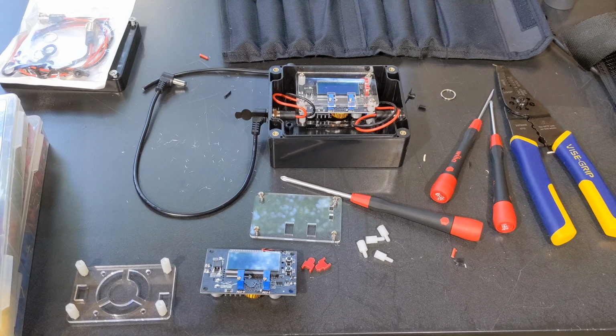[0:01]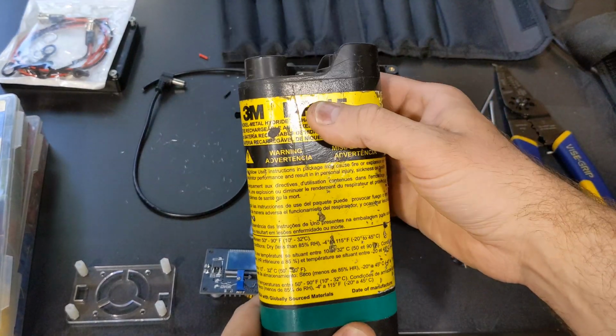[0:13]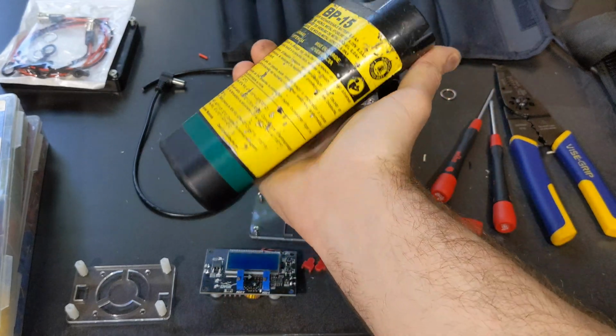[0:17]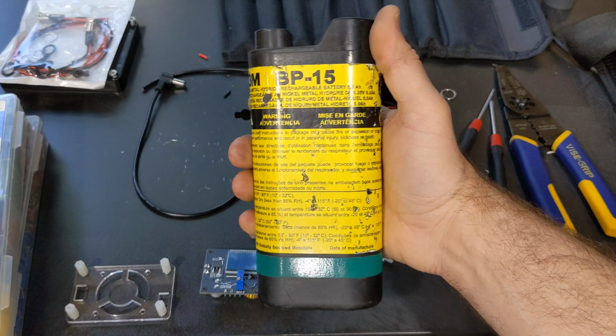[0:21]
Hey guys, wanted to do a video just going over how to convert the 3M Breathe Easy Turbo to using a normal battery instead of the BP15. So if you're familiar with it, this is the normal battery it comes with, the BP15, which is a nickel metal hydride. You know, it's pretty big and they're really expensive.
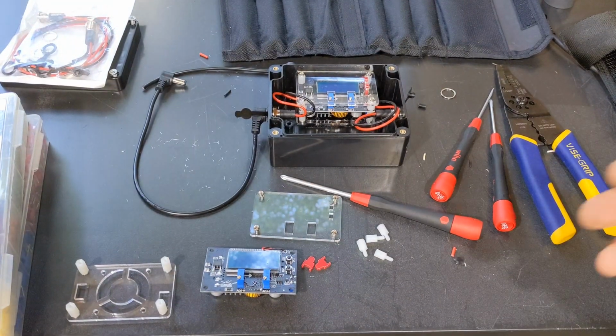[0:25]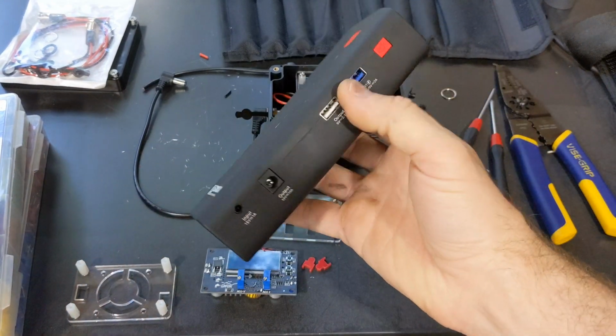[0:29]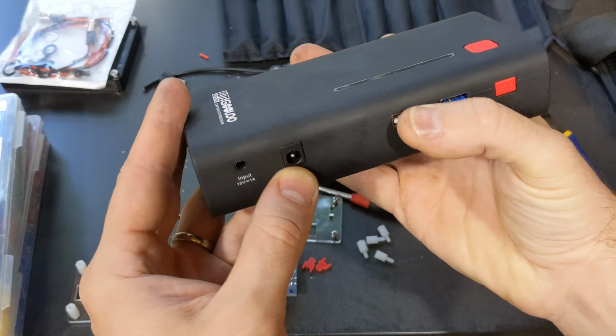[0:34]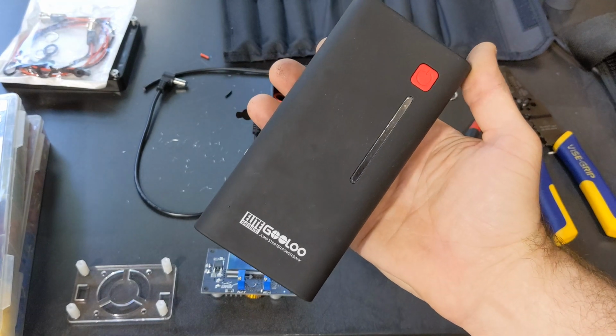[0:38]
They're like $200 or $300 for it. So what this conversion will let you do is switch it over to any battery pack, and this is probably on the larger side, but you can get all different sizes of these as long as it has a 12 volt pin output. So we're going to be going over that here, so let's get started.
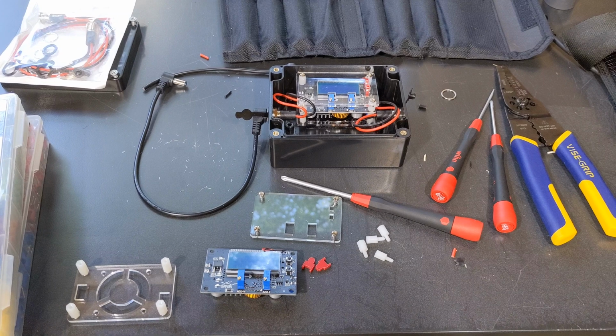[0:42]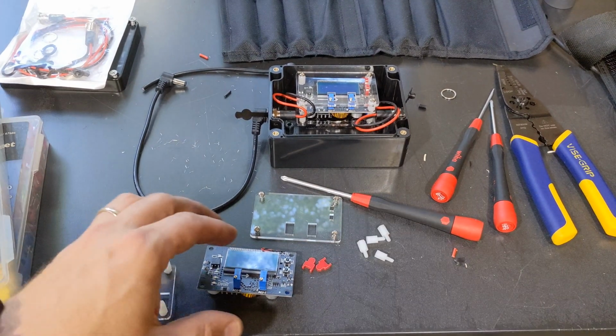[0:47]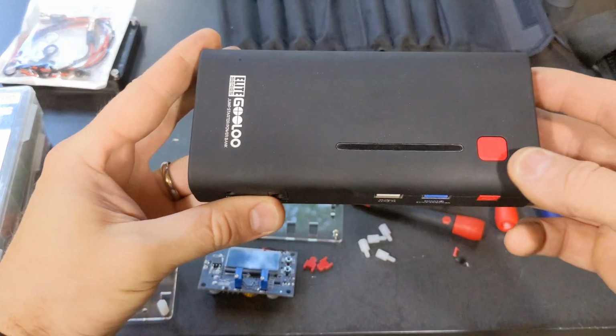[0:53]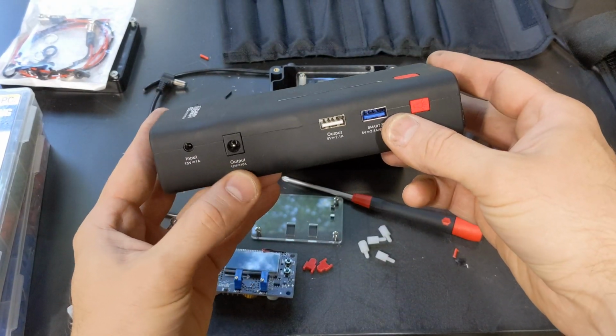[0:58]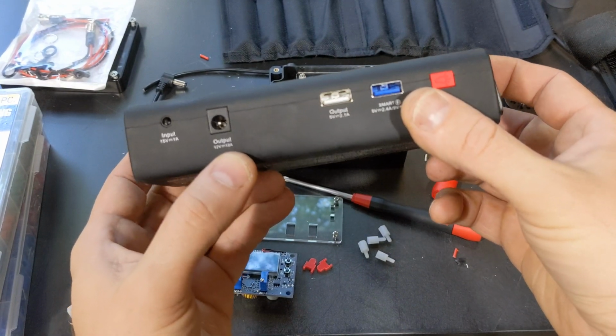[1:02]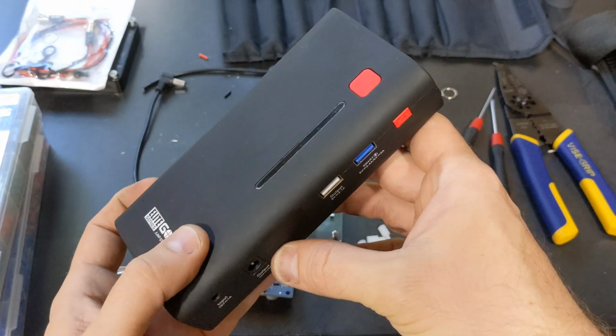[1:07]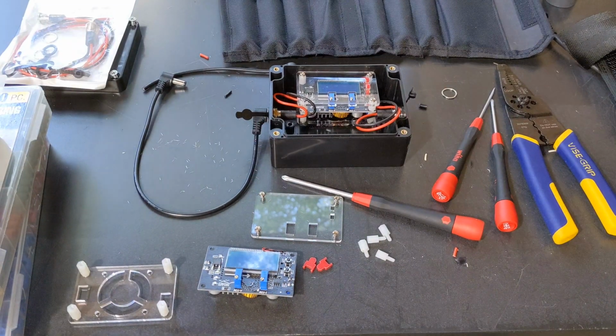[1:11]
All right, so basically what I wanted to go over first of all is, like I was saying, we're going to need to have a battery bank or battery pack that has a 12 volt output. The 1 amp is fine, but I think this will go up to 10 amps, but you're only going to need one. And basically what we got to do is we got to run the power out of this, and we have to run it to the
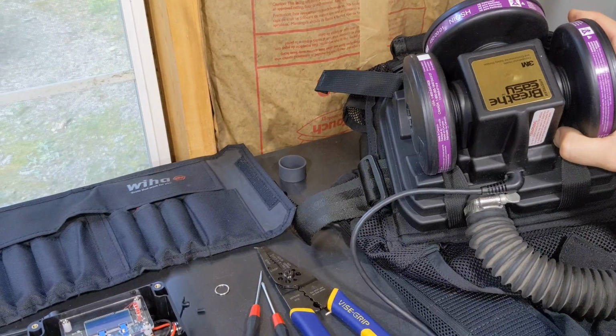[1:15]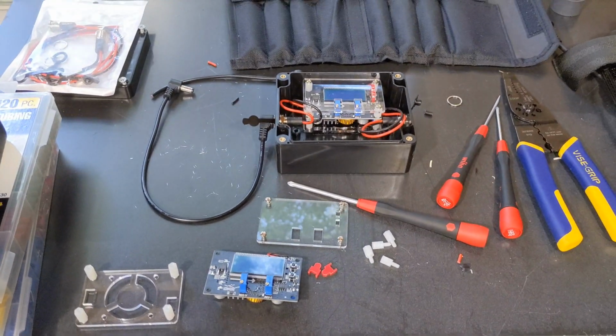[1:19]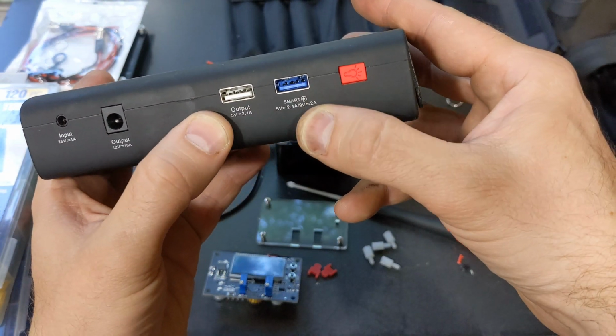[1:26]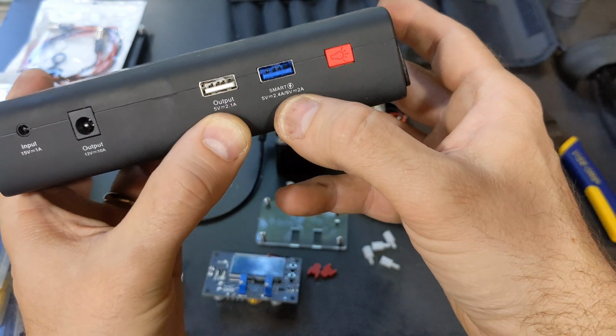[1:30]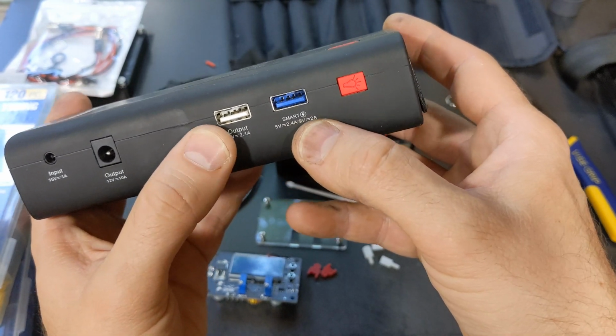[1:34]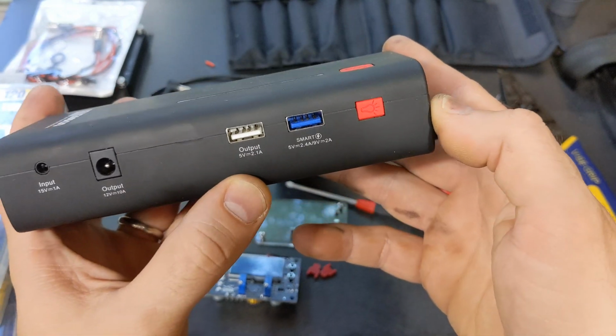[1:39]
Breathe Easy. But what happens is the regular BP15 battery is run at 6.25 volts. So a lot of people use the USB output, which is 5 volts, or some, you can even maybe find some that could do 9, although it's pretty difficult. But what will happen is that will either run under power or over power, and that could prematurely burn out the motor if you're running it over what the factory spec is.
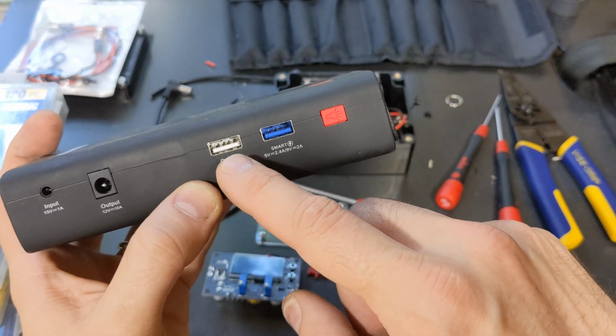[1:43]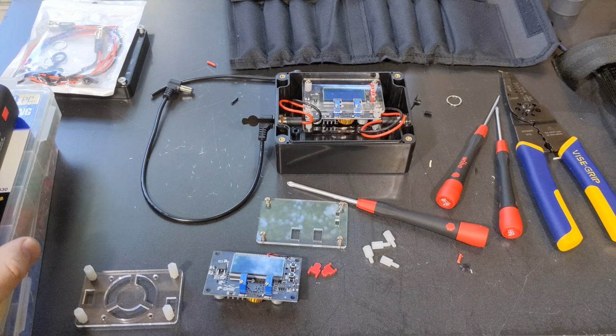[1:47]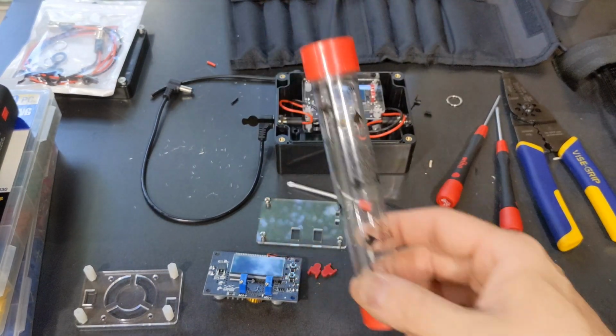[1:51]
And I didn't want to run it under power. You can, it'll still work. It'll put out over 6 CFMs of air. I've got a tester here. So what we're going to do is go over how to set it up at exactly 6.25 volts output, so you get the exact same amount of air CFM output that the factory battery gives you.
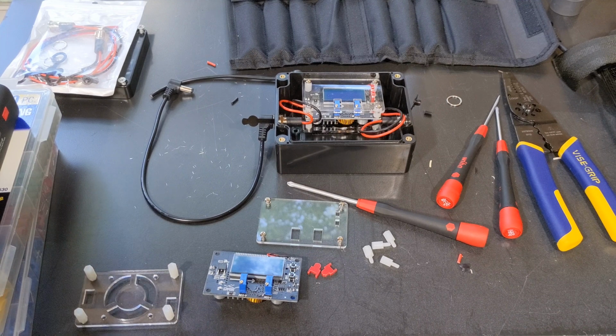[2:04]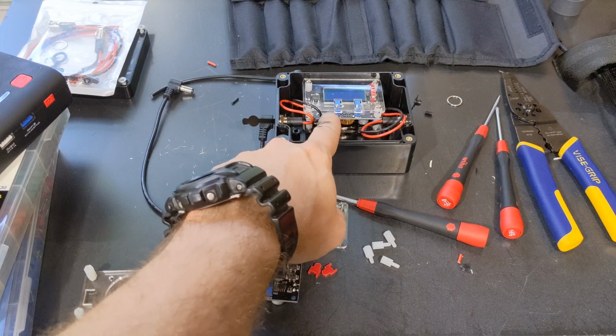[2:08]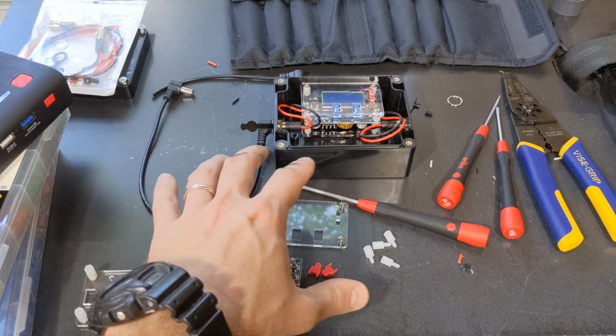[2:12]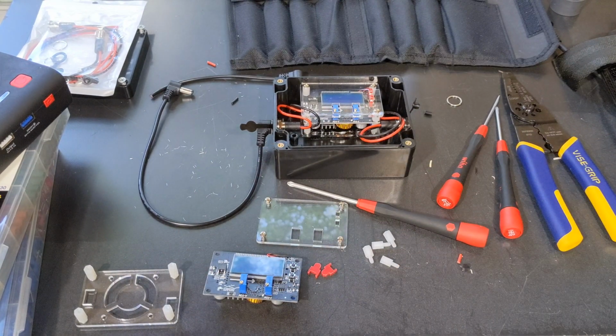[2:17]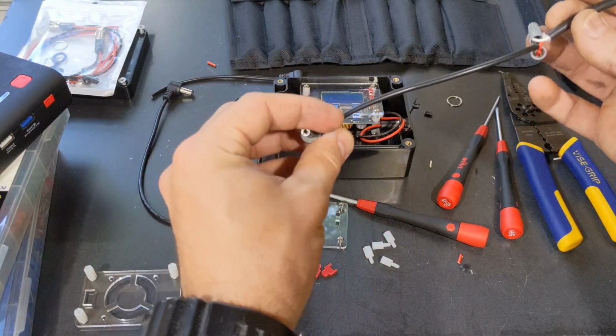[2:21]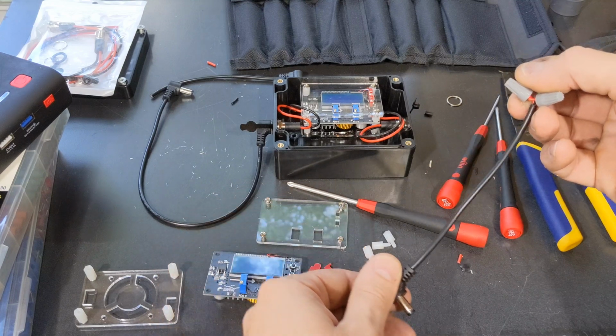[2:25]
So basically what we do is we run the power out of the battery pack. It goes through this thing, which is a buck converter, and I've got another one right here, so I'm going to show you how to set that up, and then it runs into your Breathe Easy. But what we have to do is actually a cable conversion. You'll see right here, I just snipped it and wired these in. I'm going to be going over how to do that. I'm going to get rid of these wire nuts and actually solder it.
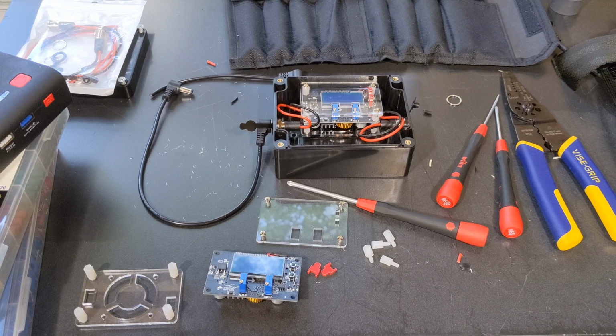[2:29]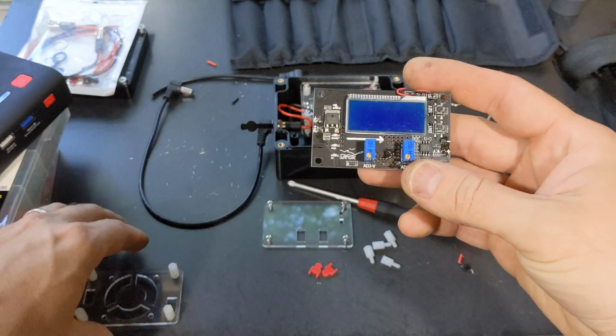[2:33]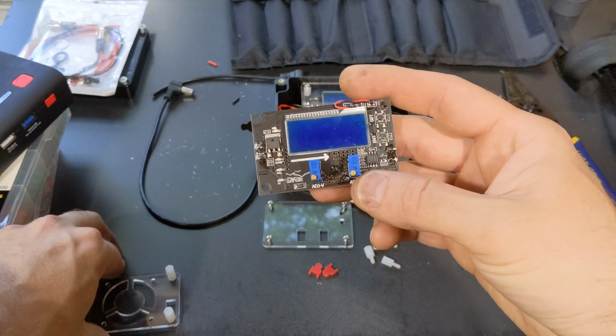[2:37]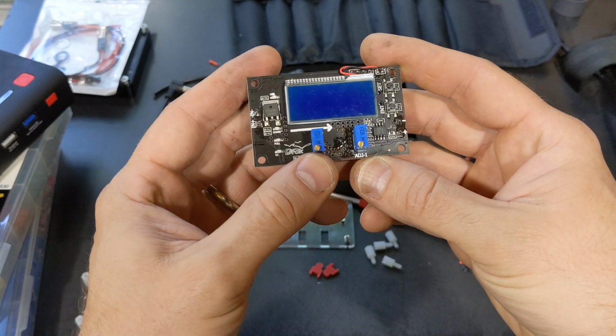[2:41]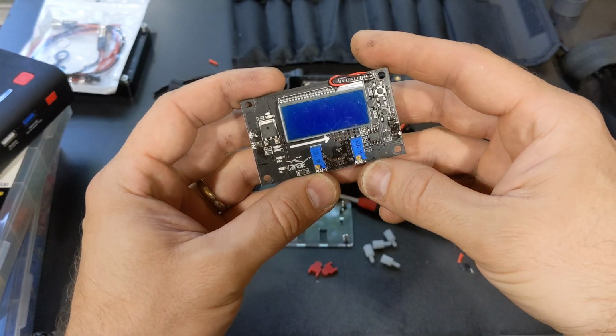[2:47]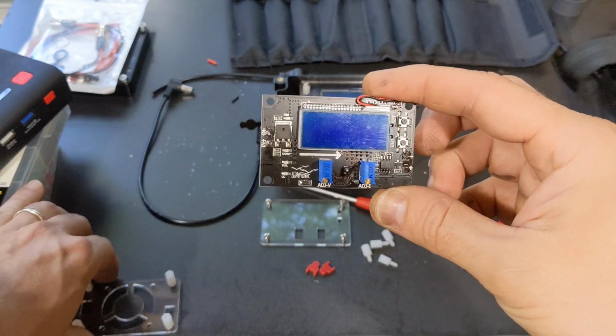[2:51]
So here we go. Basically, I ordered this from Amazon. It was about 15 bucks, a buck converter. And you can custom set the output on both voltage and the amps. So this little flathead screw right here on the left side will adjust the volts, and the one on the right will adjust the amps output. So I'll show you how to do that. This one I actually fried because I set it up wrong. So make sure you don't do that.
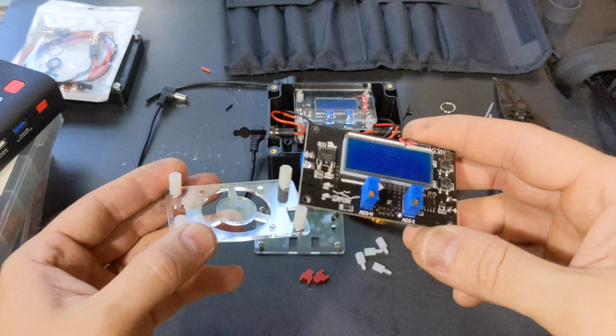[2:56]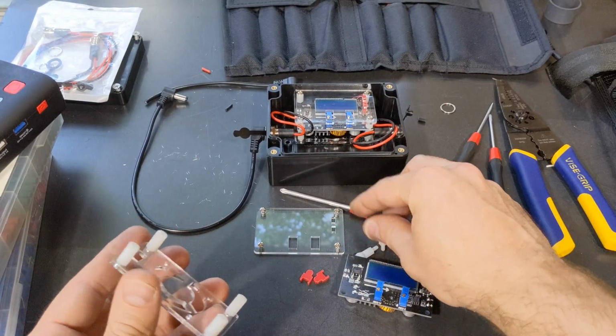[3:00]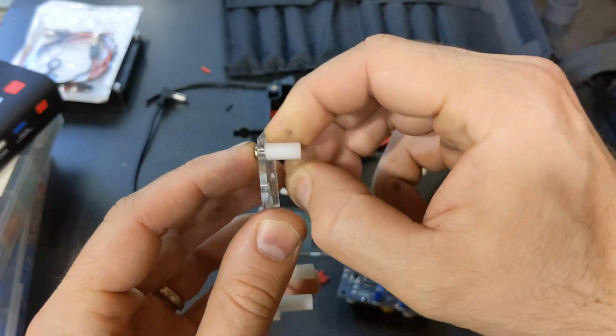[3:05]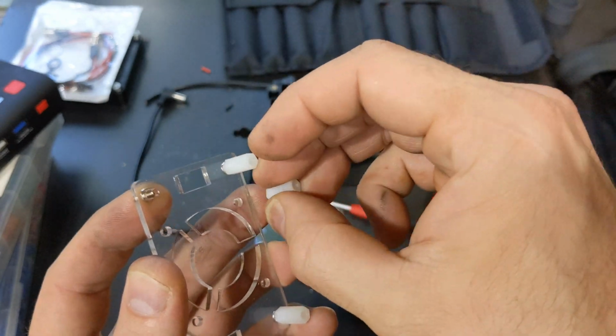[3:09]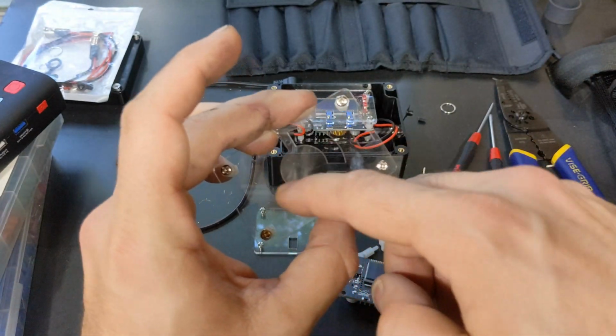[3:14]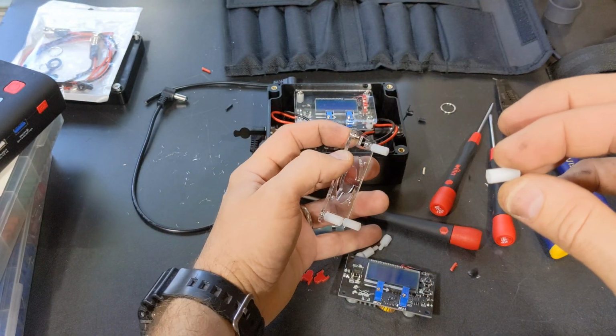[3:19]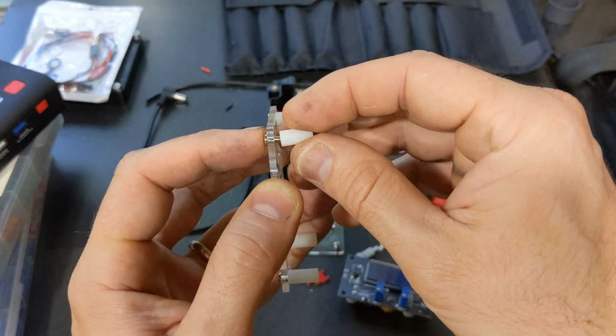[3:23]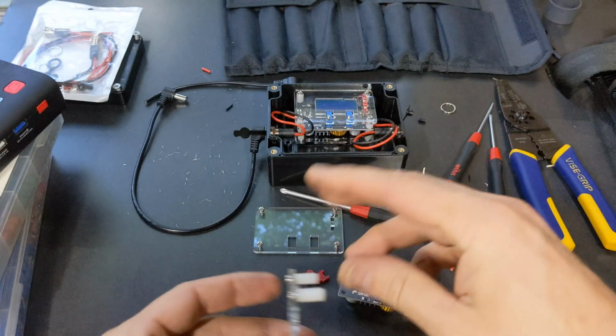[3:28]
But basically, it's going to come all disassembled in pieces. And what you'll do is, you'll see it's got these screws here on the back side, but it's all disassembled. But basically, you have a threaded portion on each end of this bushing, and you'll notice this kind of has a fan type cutout. So these are the longer out of the two. These other ones are shorter, and they have a male threaded portion coming out of there. So we'll just stick this on here, and to save time, I already got that assembled with those.
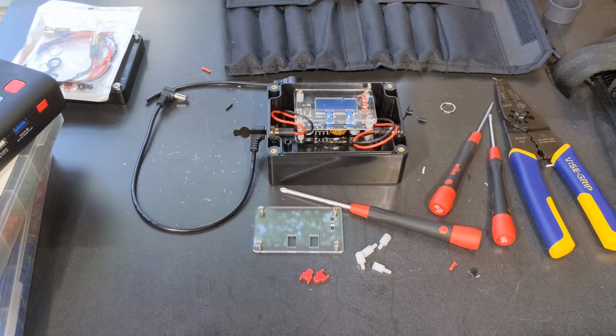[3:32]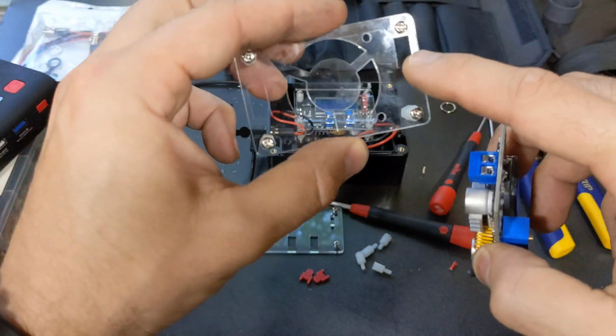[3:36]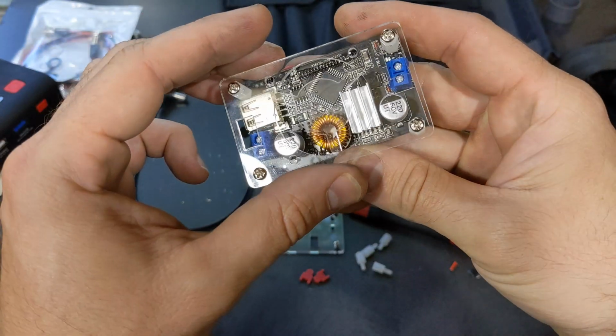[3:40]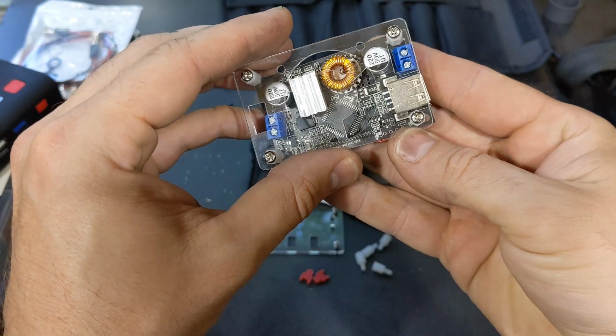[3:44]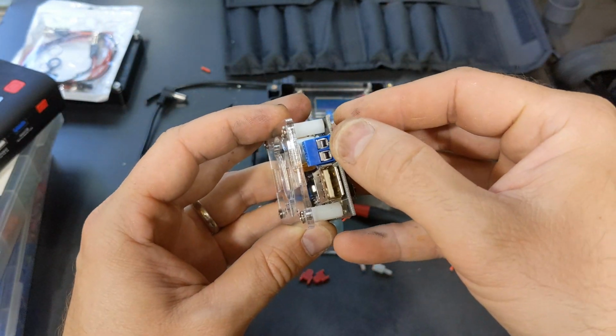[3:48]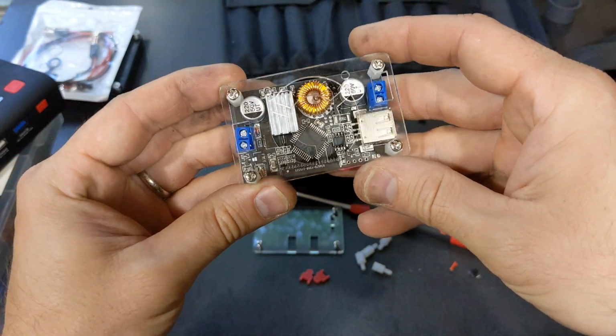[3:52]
Then what we do is you'll notice these rectangular cutouts right here and here. You just want to make sure that you line that up. So obviously that's not the right position. So we got to spin it around, because you want to be able to tighten these down. This is where your wires are going to go. You have your input and your output. So there you go. Got those lined up.
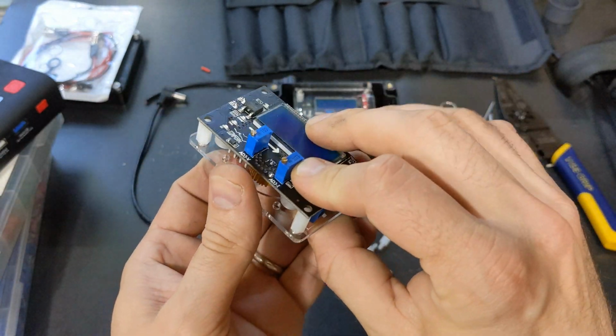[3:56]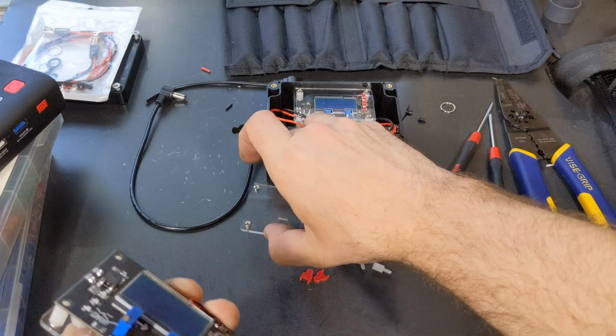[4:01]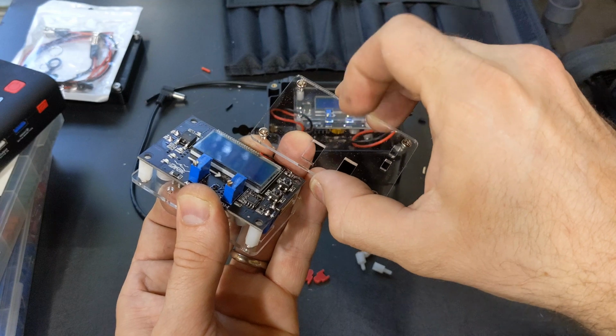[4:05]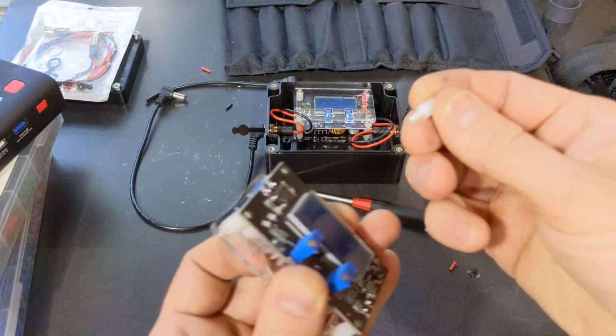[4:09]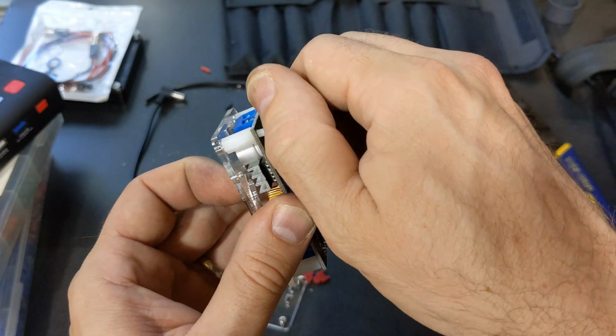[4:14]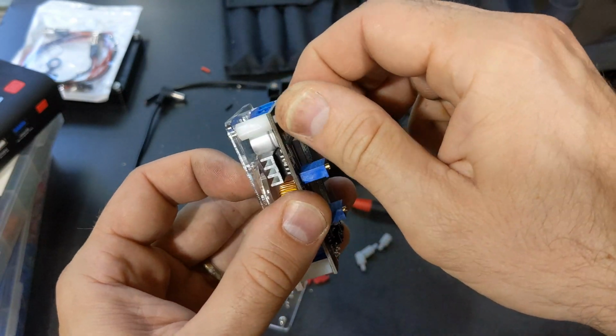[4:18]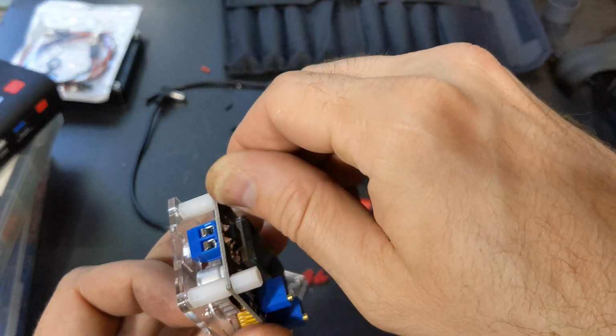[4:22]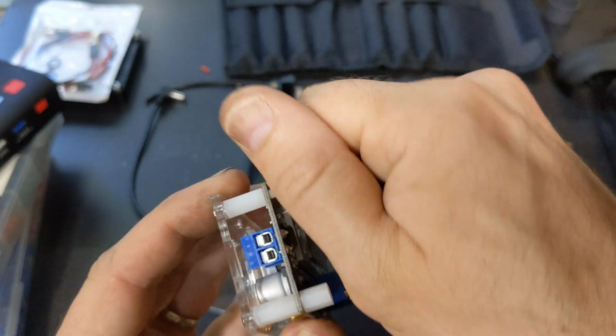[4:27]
Then what we'll do is we'll flip it over, hold it all together, and we will get our other plate. Now these came with a paper that you had to peel off to get to the actual plastic. We have to take these other bushings with the threaded rod, and we'll go through the circuit board. There's already holes there for it, and you just thread it into the other standoff there. All right, let's see.
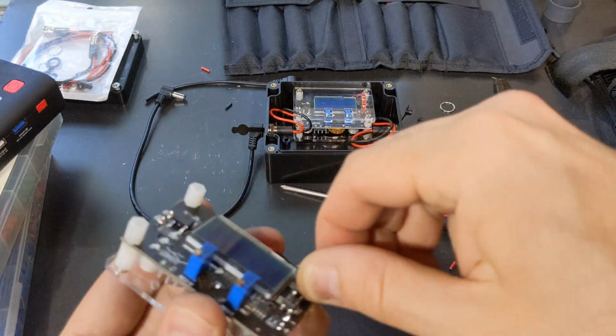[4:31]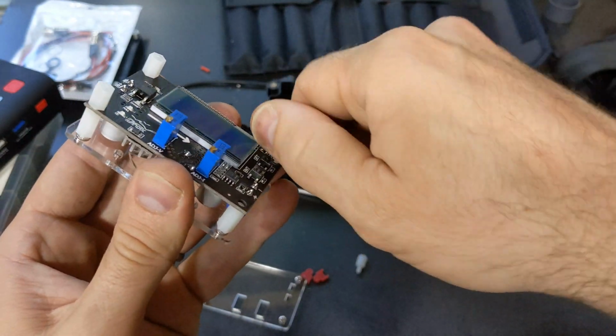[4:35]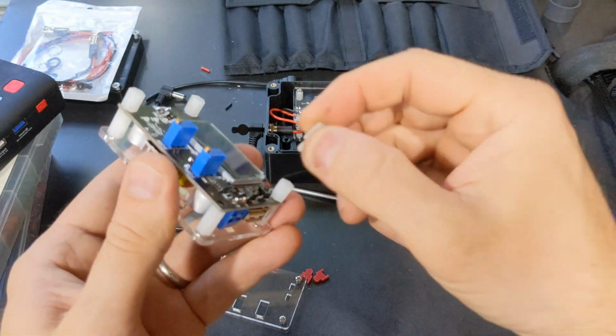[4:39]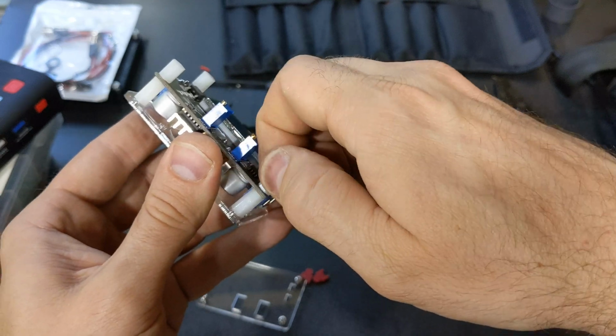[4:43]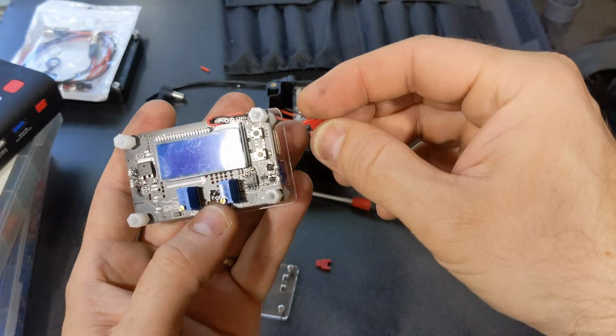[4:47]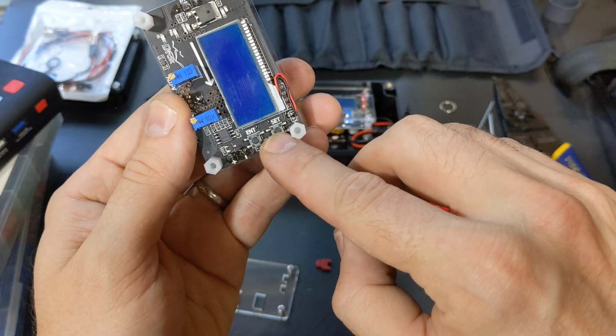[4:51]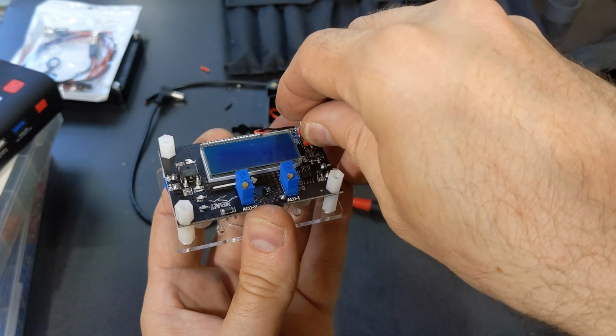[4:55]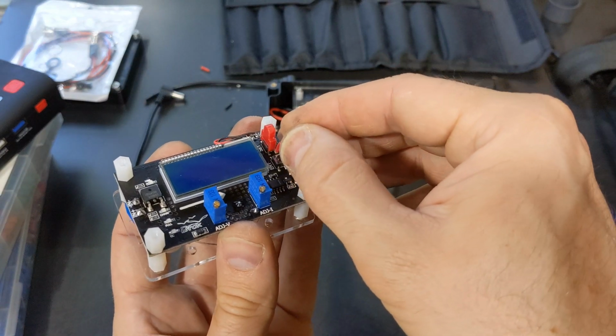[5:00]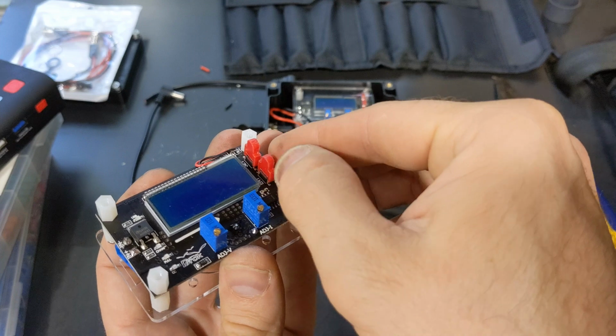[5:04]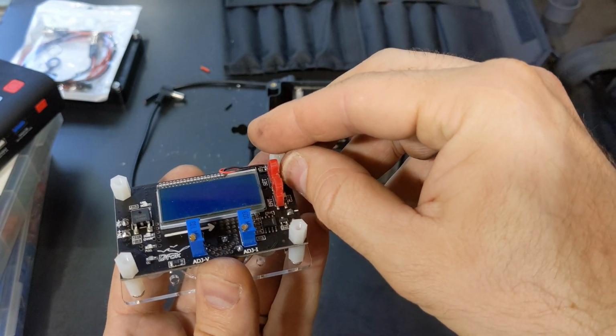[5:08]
All right, and then you also notice you have these two red things right here. And what that does is that goes on right here. You have your enter and your set button. And so we just kind of rest these on top. And this might be kind of hard for me to do on camera, so I'm just going to show you what you got to do. But you basically just rest these right on top of there, and you just try to make them line up as straight as you can. You can kind of see that.
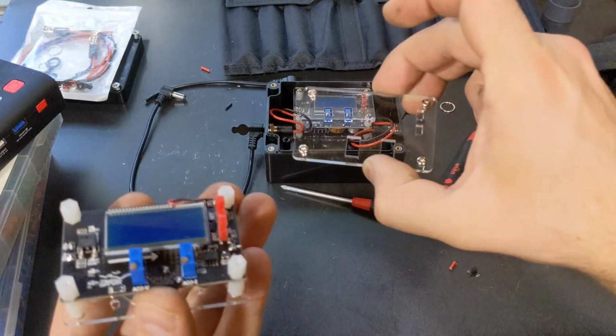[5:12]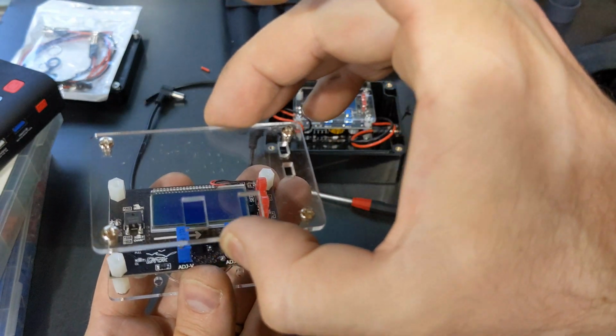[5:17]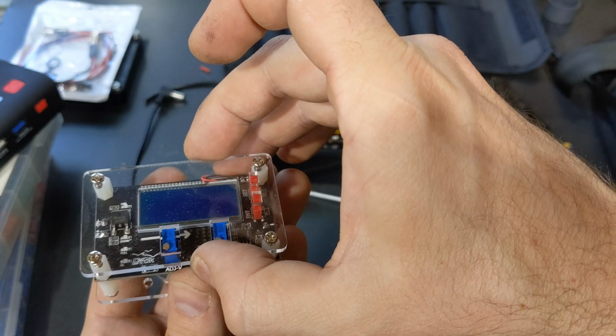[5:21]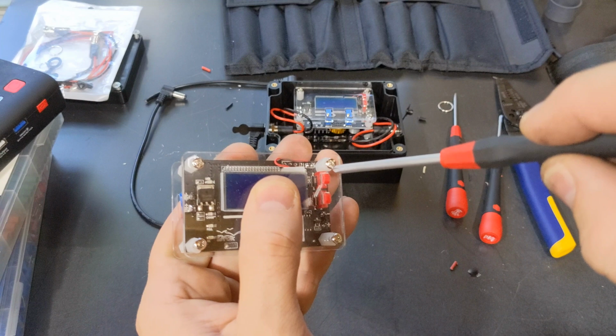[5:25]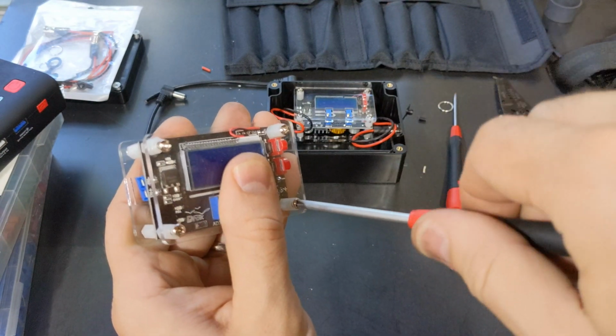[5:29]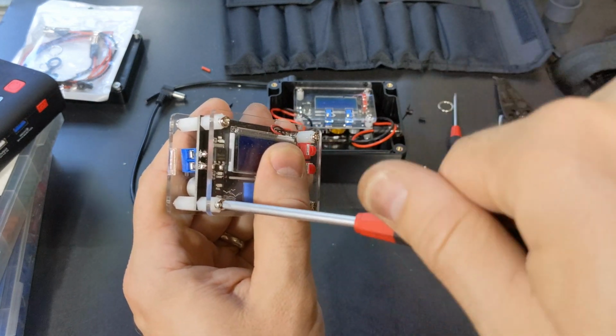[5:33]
Then you go ahead and stick your screws through that. And you see those two slots on the right side right there? That's where the red buttons have to go through. So we'll see if we can do it on camera. I doubt it, but... Ha! Got it. And then all you do is just tighten these down. And you've got it assembled. So that's how you get it assembled.
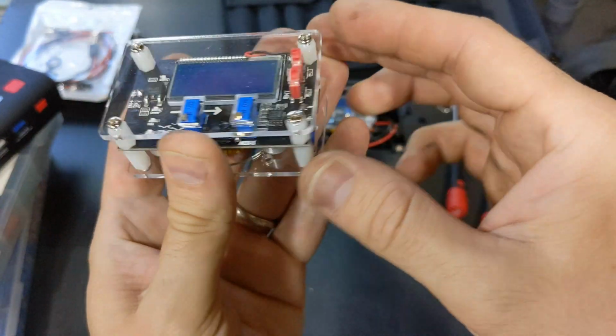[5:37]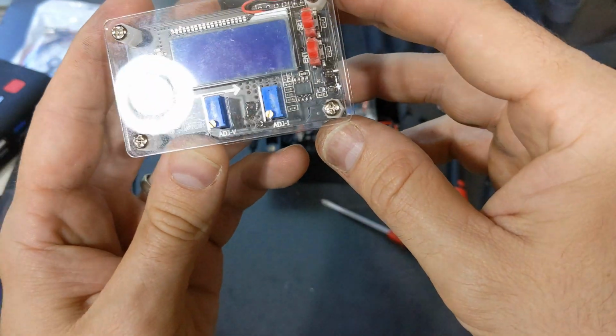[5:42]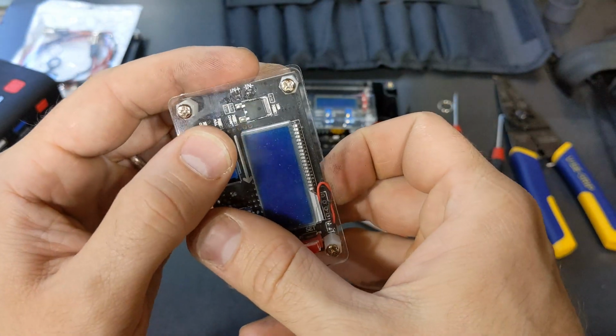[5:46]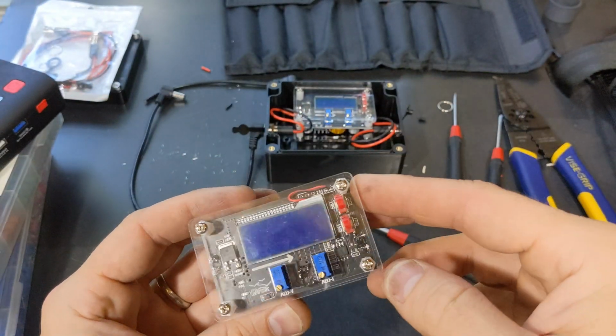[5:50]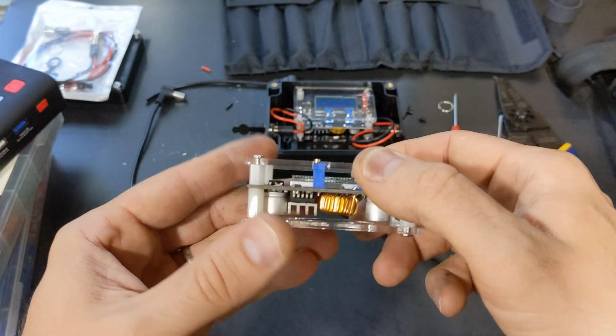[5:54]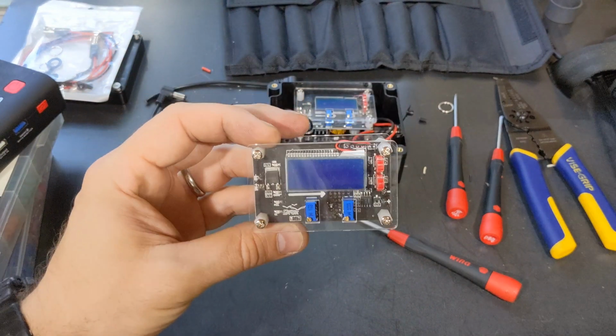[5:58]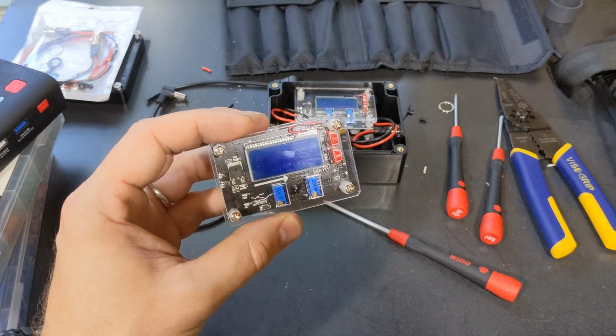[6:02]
Now, your output side is the side with the USB port on it. The other side will also say "in." So you know that's your in, and that's your output. And then that's just your digital screen right there. That screen does have a piece of plastic on it. You got to peel it off before you put this outer protective cover on. Anyway, that's how you do that. So I'll go on how to set it up here in the next segment.
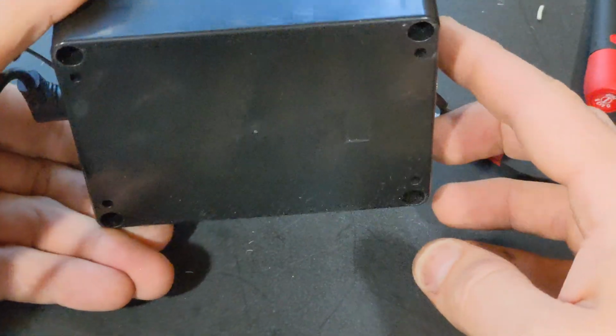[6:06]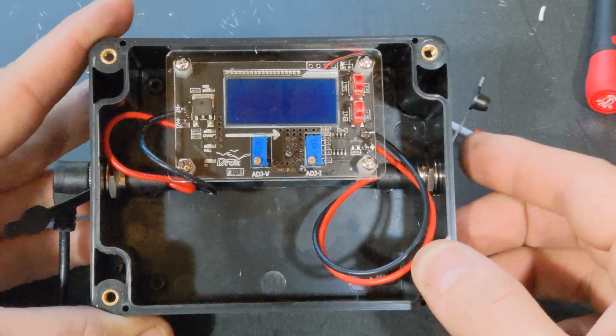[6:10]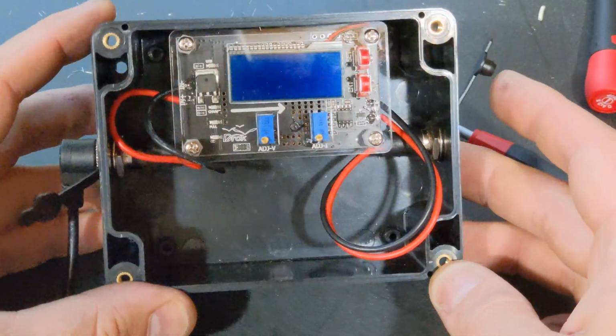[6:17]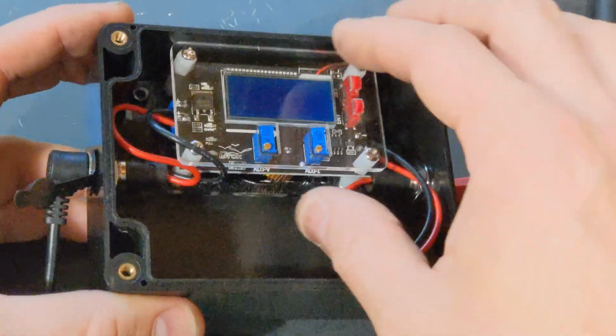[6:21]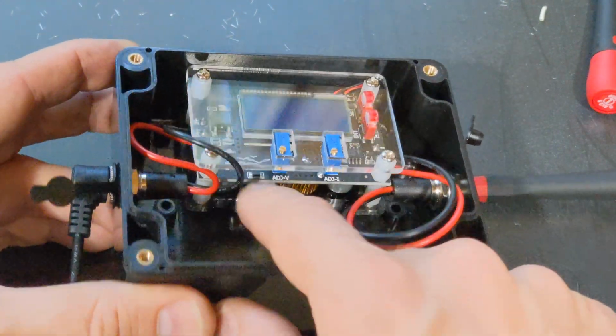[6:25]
Okay, so I also got this box here. This is a waterproof box. It's got a seal that goes all the way around it and everything. And then I've got these waterproof 12 volt pin connectors here. I'll put a link in the description where I got that from, but all the stuff's from Amazon. So if you have any questions, give me a buzz. Basically, I just stuck Velcro on the back of this and just stuck it in the box so it would be stable in here.
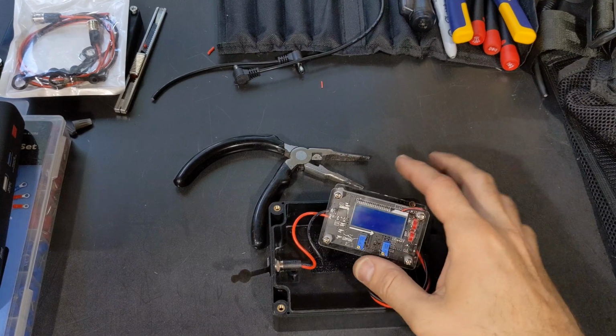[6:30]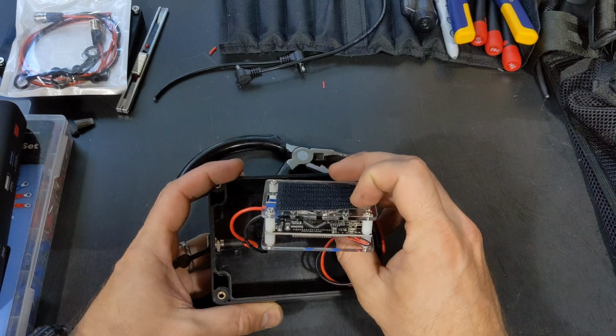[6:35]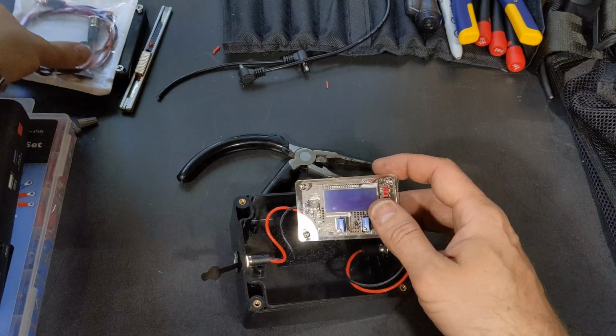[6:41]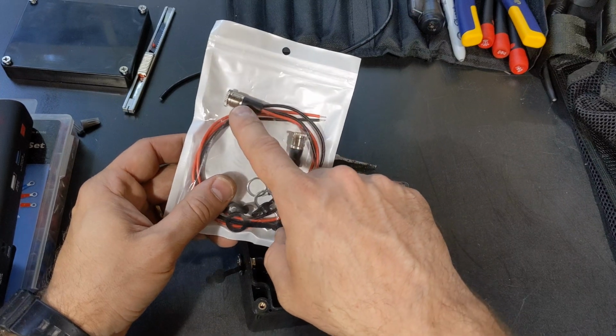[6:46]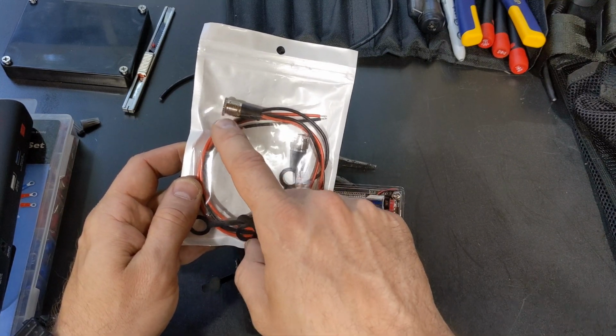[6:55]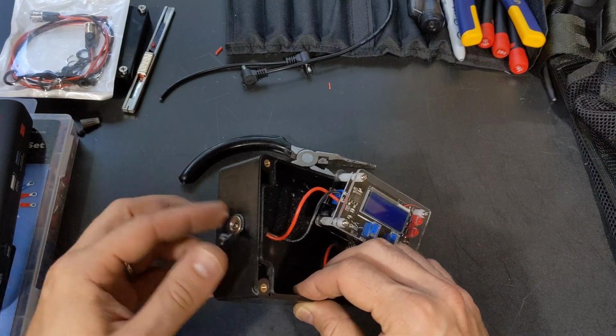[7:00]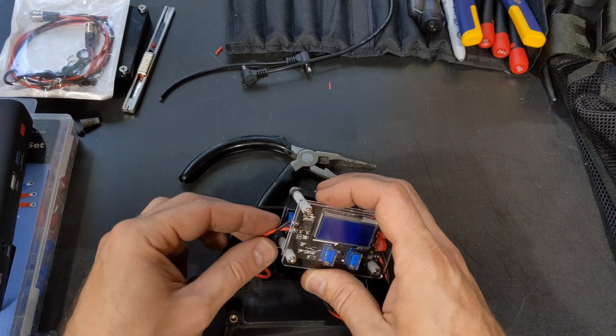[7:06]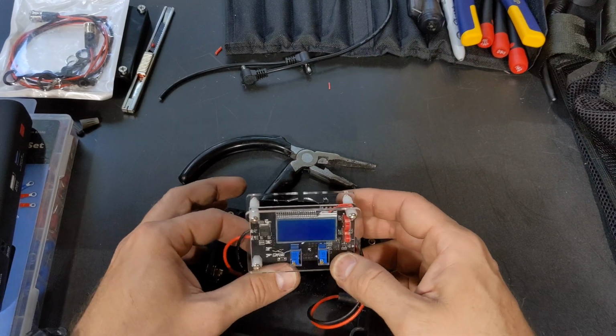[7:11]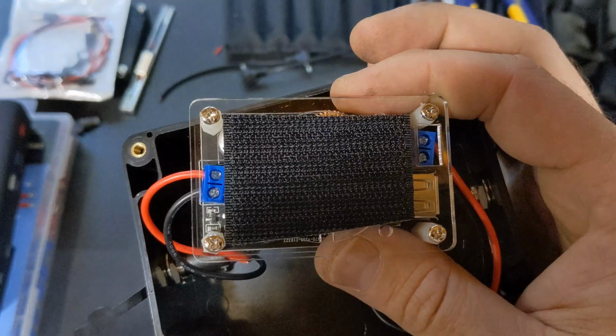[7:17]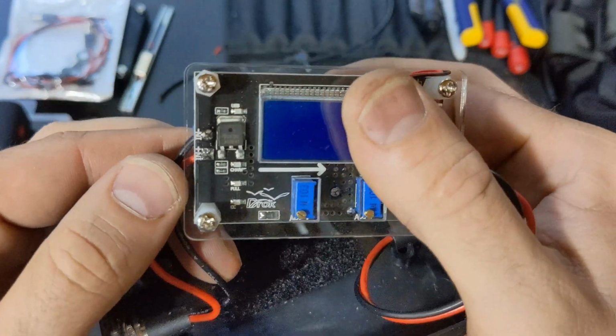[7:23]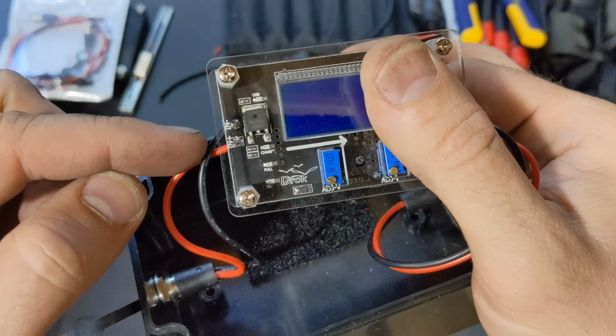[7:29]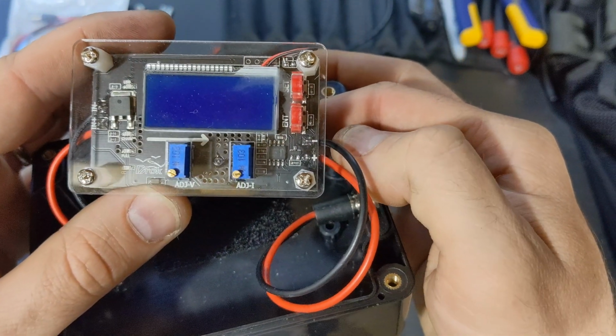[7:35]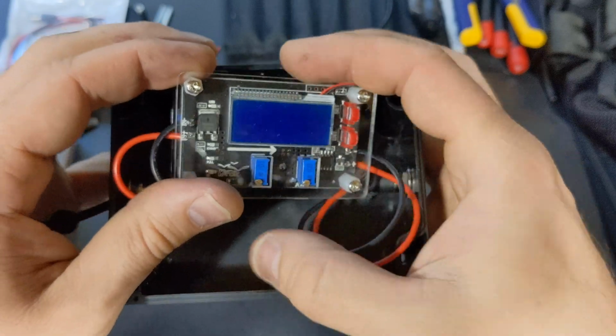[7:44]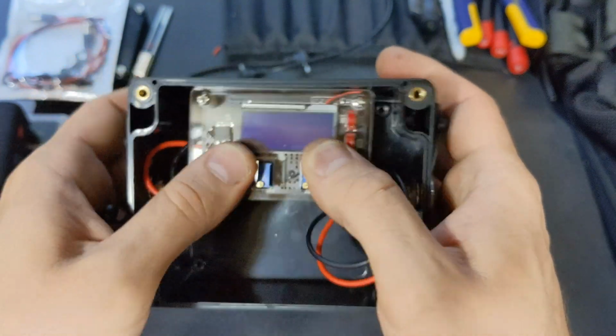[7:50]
Hold on a second, let me get a close-up shot here. All right, so basically, okay, the positive is the red wire going in, and the black wire going in is the negative from your pin connector. And then the same thing on the output: the positive is the red going out, and the negative is the black going out. So that's just how I have it set up there. So I'm going to go ahead and put it back in here. And then we will set up the programming here.
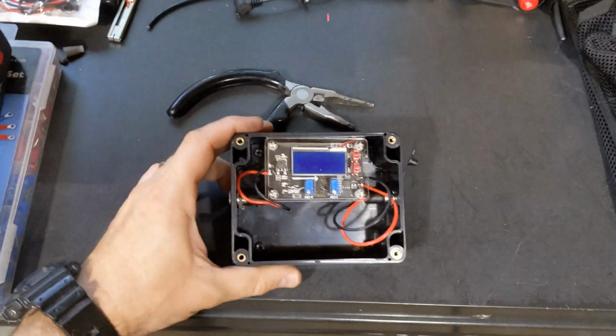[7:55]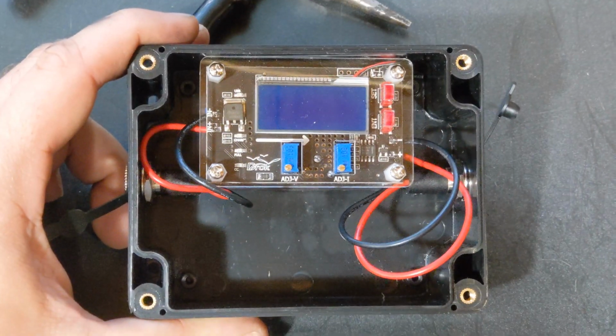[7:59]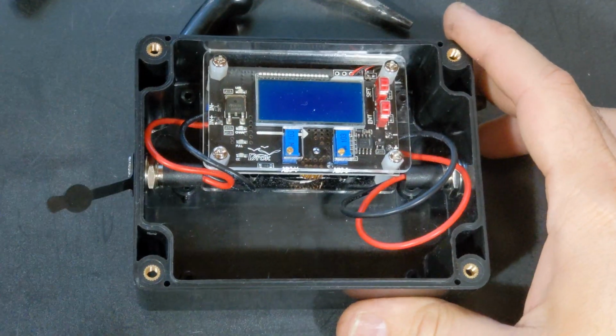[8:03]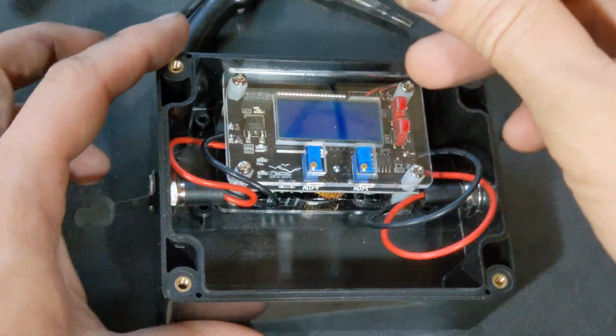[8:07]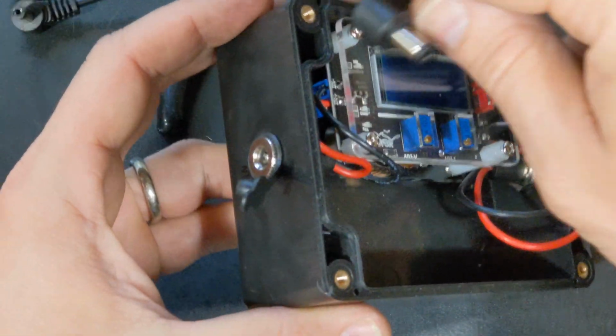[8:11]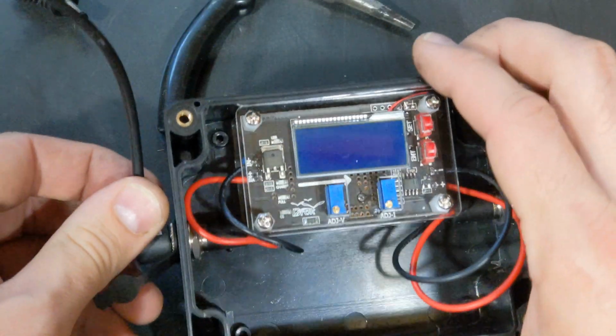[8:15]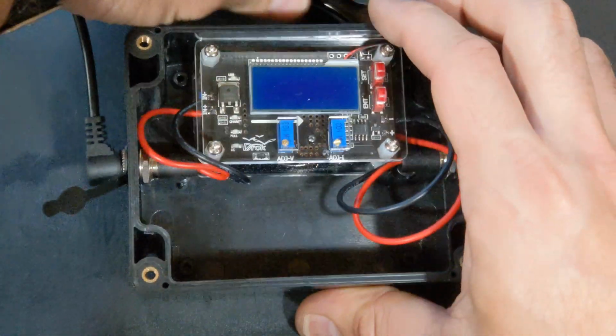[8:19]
All right, so let me zoom in here. Okay, now what you're going to do is just make sure you do not hook this up backwards. That's how I fried my first one. You want to make sure that it is coming from the battery going to the inside. And then, let's see here.
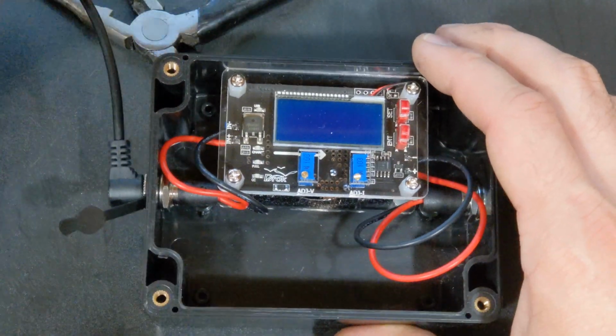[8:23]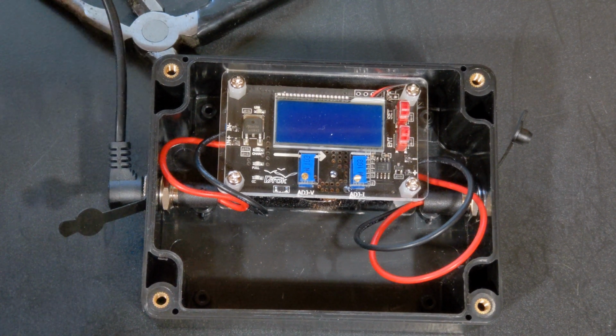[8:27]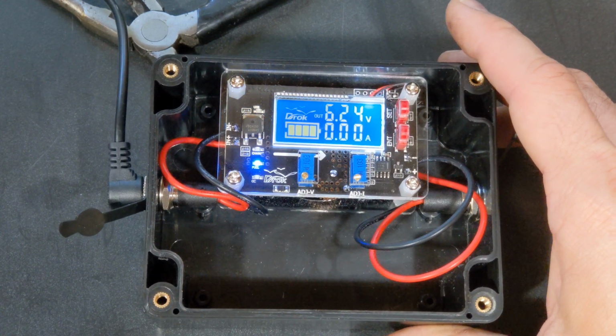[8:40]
And then you don't have to have the other side plugged in yet. All right, so we'll go ahead and just plug it in here to your battery bank. Then you can turn it on and it'll power up. Now you'll see I've already got it set to the 6.25 volts, but let me grab my
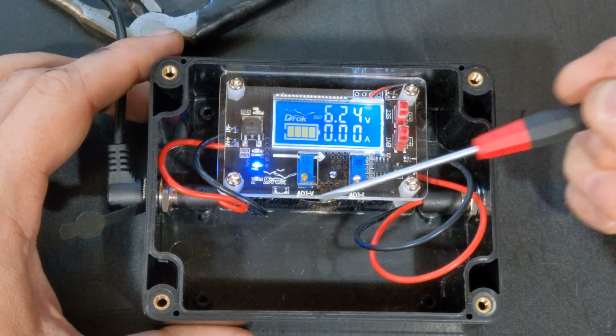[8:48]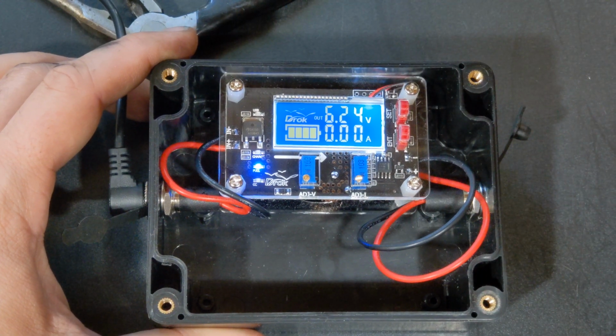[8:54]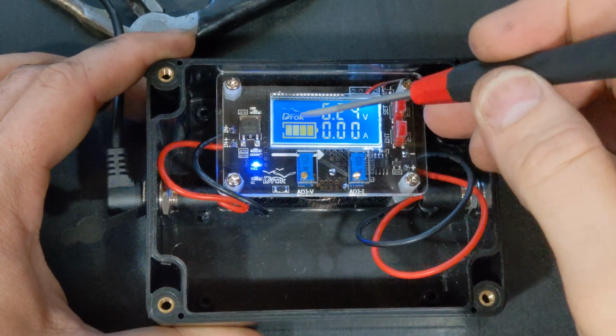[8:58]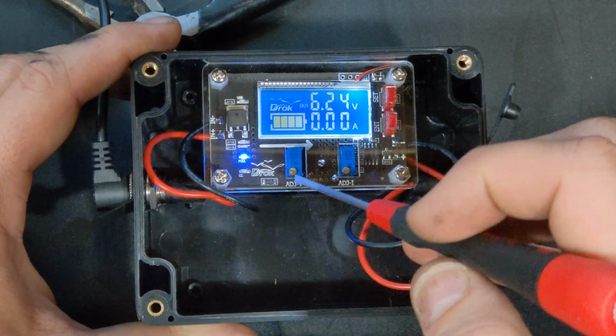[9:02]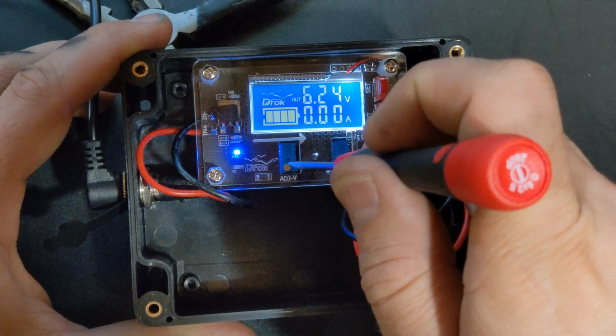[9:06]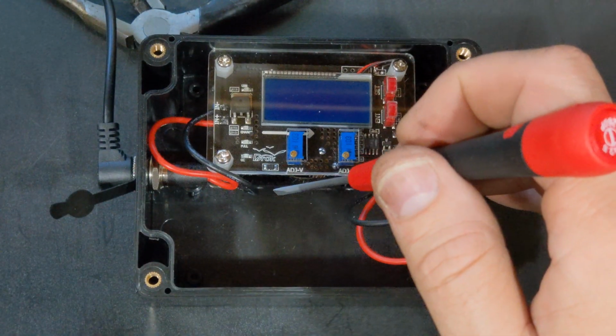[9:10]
flathead screwdriver. So you remember me saying that this screw right here controls the voltage. And so if you can just play around with it, all you do is you have it plugged in and you can adjust the voltage. Now the amperage is a little bit different, but let's see here. Okay, so my battery bank cut off because there's no load on it.
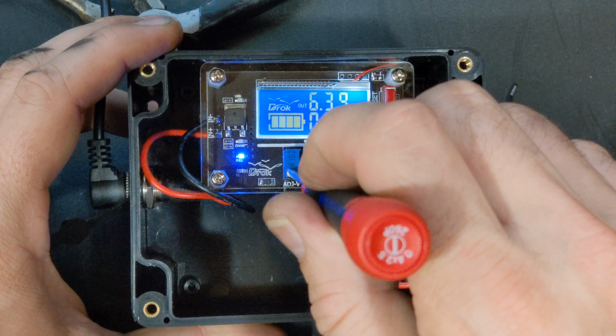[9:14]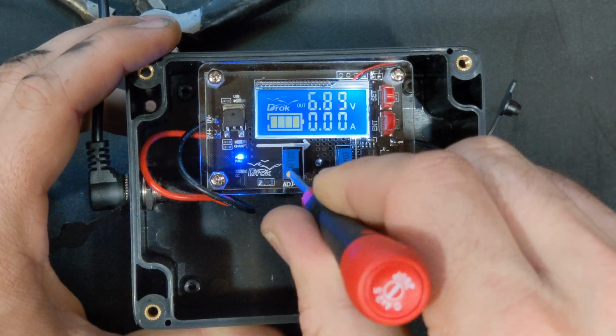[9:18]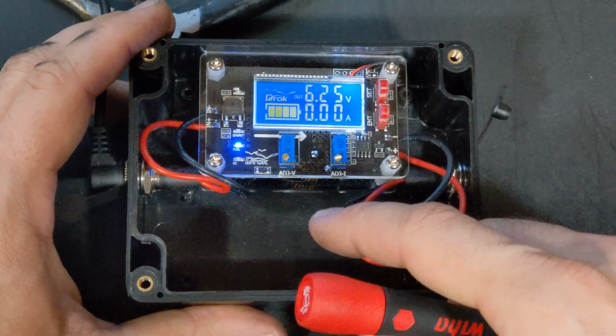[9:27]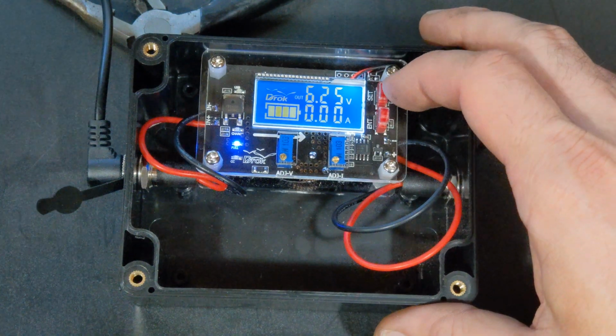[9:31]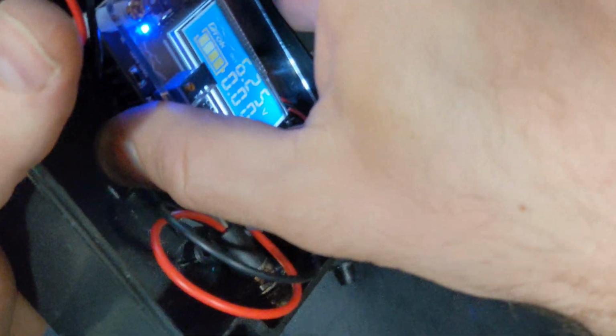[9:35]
But if you turn it clockwise, you can change the output up or down. So you just set it where you want it. So 6.25 is the factory setting. So we'll leave it there. Now to adjust the amperage, I'm not going to demonstrate it, but I'll show you exactly what to do. I guess I shouldn't have put this back in yet.
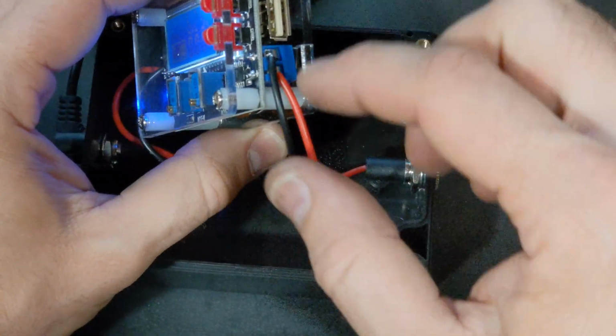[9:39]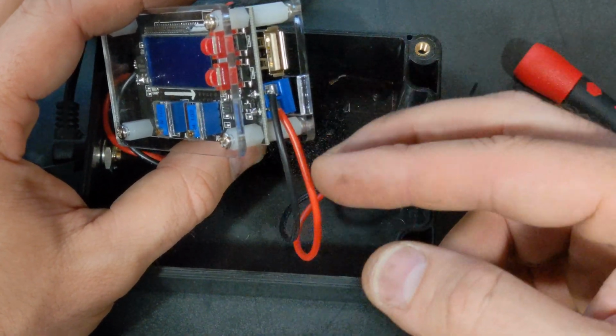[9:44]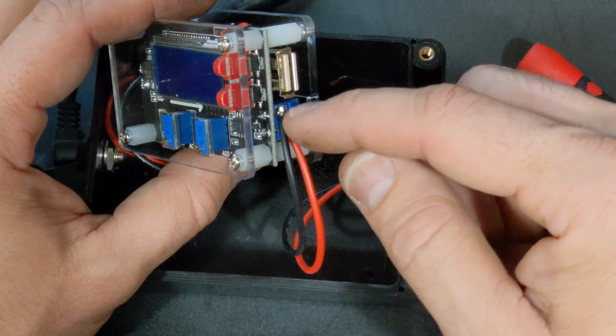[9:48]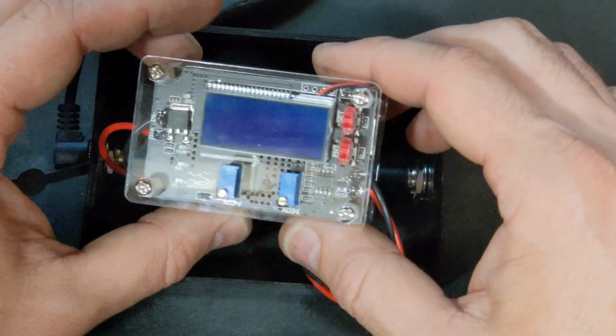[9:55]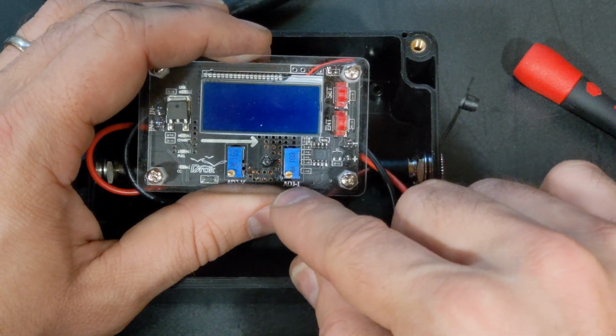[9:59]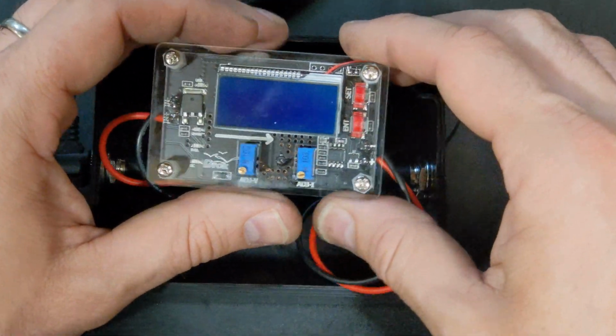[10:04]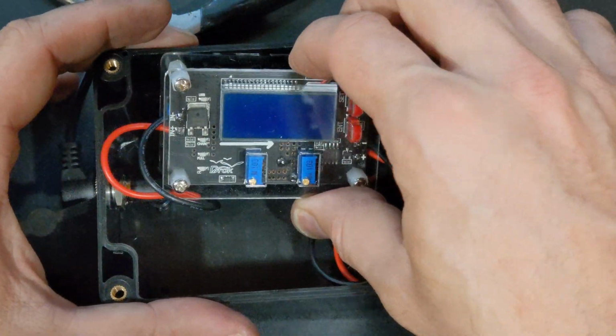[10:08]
But, all right. So on your output right here, where you have the black and the red wire coming out, you actually just snip a little piece, one little piece off, maybe an inch long off the end of one of these, and you'll actually jump it. So you'll put one end of the 1-inch piece in the negative and one in the positive, and it won't hurt it. You just go ahead and power it up, and once you do that, it'll let you change this up and down. You'll see your amperage adjust there. So that's really easy to do.
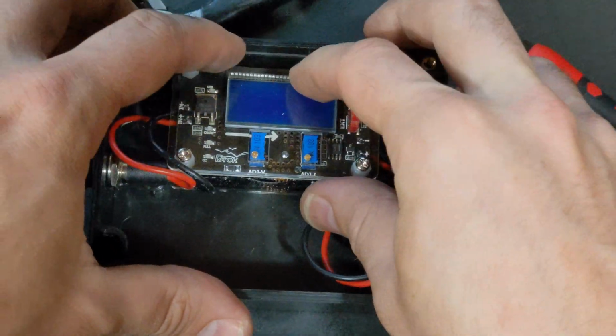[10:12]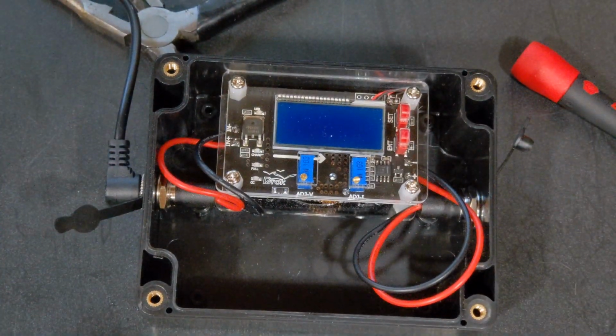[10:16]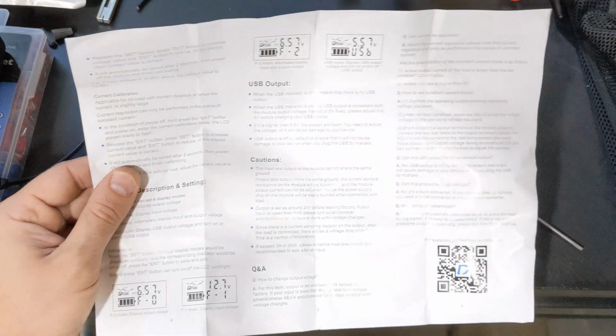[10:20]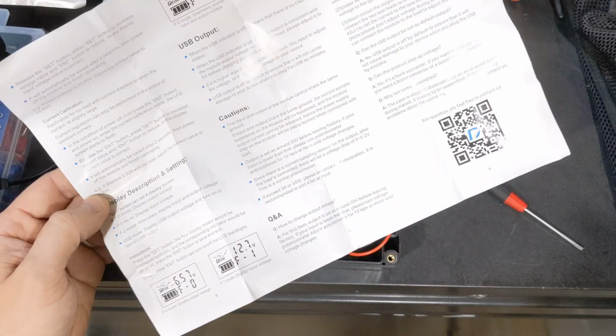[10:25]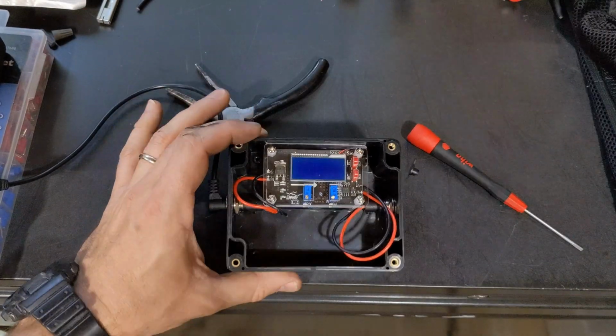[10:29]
And also, I wanted to mention it comes with the manual, which is pretty self-explanatory as well. So you know, if you have any questions, it's pretty easy. You can actually change the output on the USB port as well. But yeah, that comes with the buck converter.
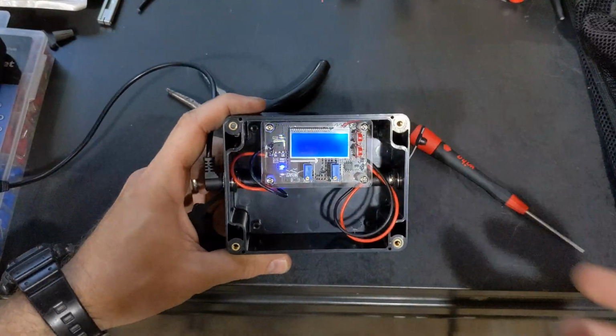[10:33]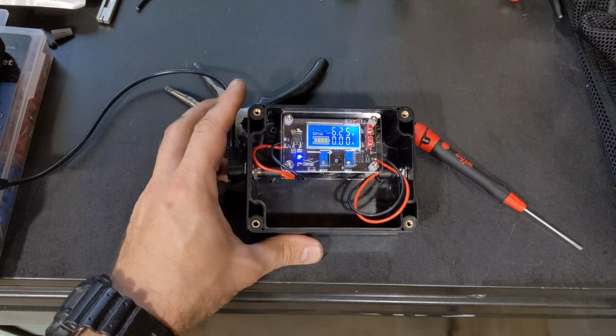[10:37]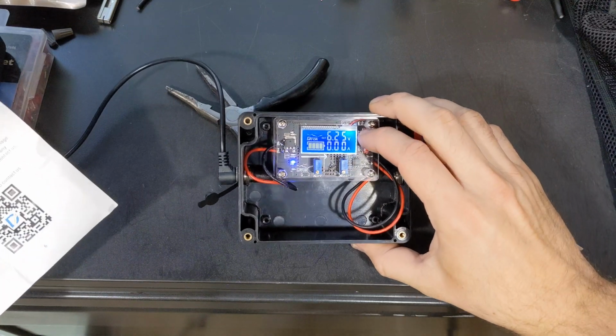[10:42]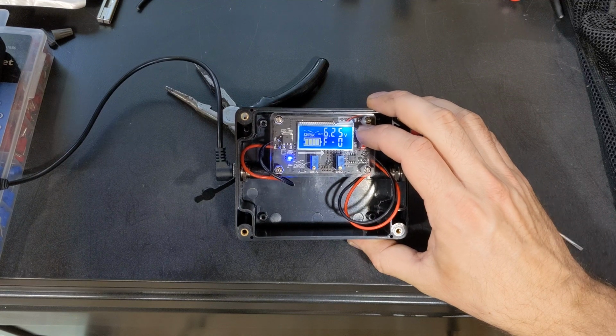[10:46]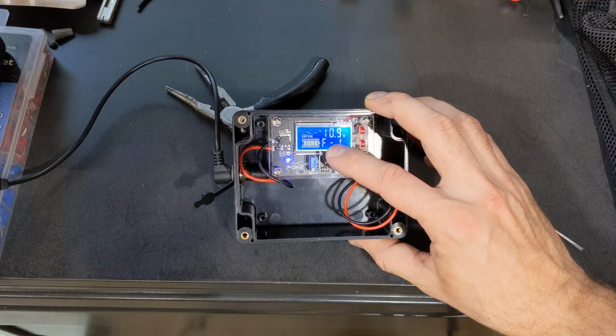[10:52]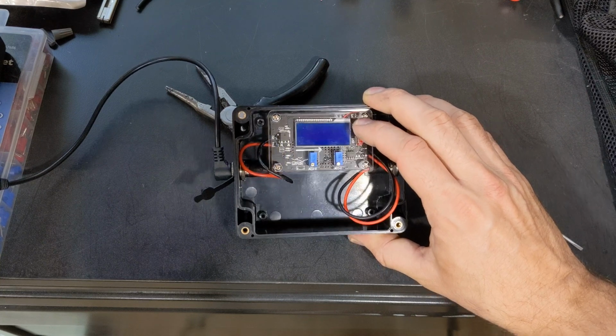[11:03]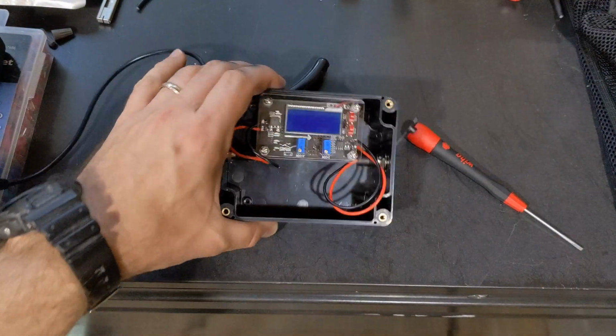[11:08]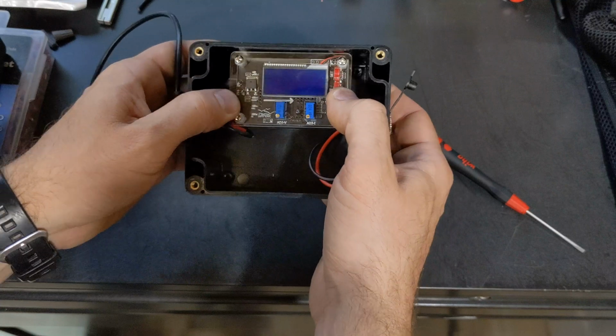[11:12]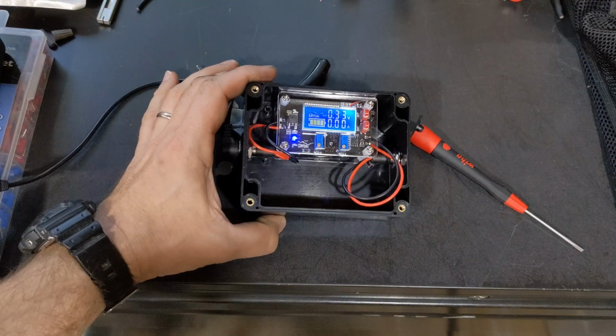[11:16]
So let's see here. So the settings, real quick. All right. So if you hit the set button, the F-0 displays your output voltage. The F-1 mode displays the input voltage. So I've got 10 point something on my battery, which is a little low. The F2 will alternately display the input and the output voltage, and then you got your USB mode right here that you can turn on and off. So, you know, that's basically a rundown of how the buck converter works. But get it all wired up, get it set up in your box, and you are good to go.
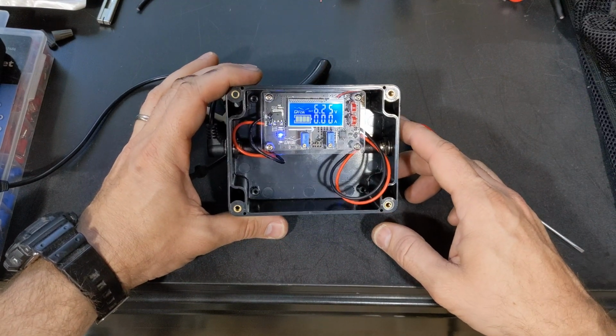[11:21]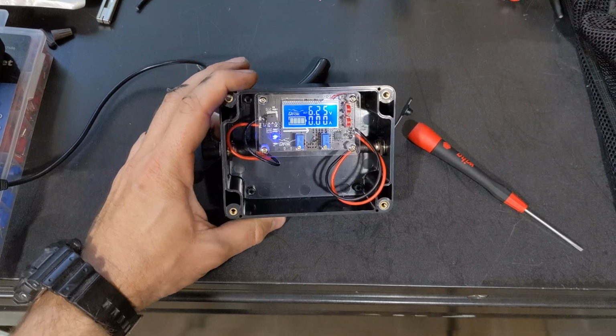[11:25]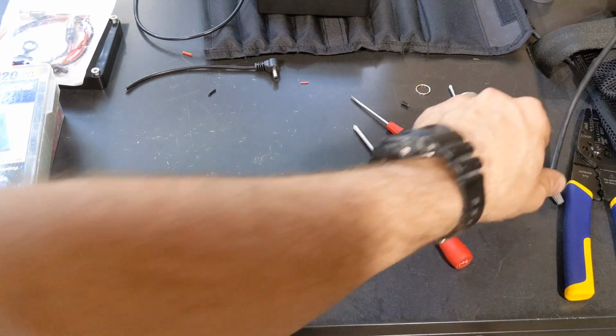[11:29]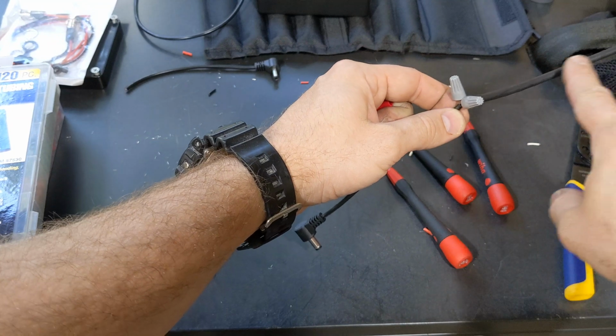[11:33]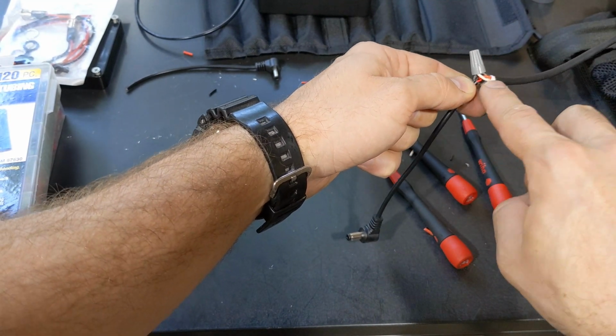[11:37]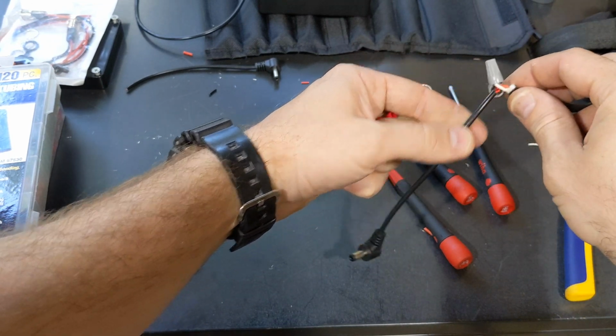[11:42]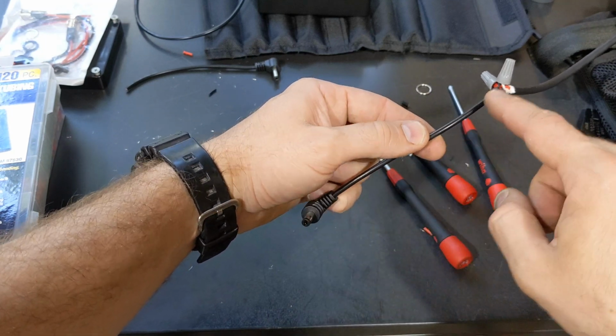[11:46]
So let's move on to getting the wire set up to the Breathe Easy so we can plug it in the other end and get it to run. All right, so in this segment, we're going to be going over how to set up this wire that actually comes from the Breathe Easy. So you're going to snip it, and you'll have two wires, a white wire and a red wire coming out of there, and you'll strip the ends off of that, and then you'll also have this. This is what I got from Amazon, the pin connector, and you do the same thing with that.
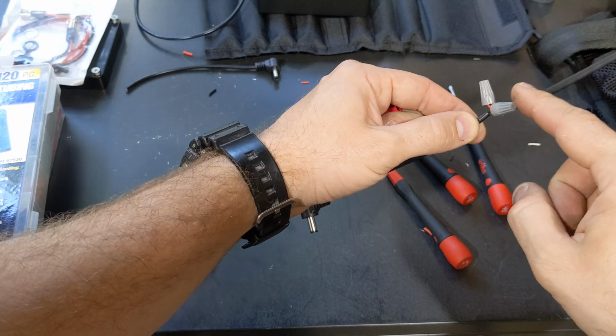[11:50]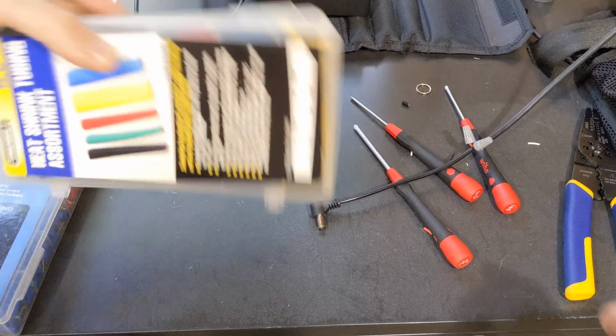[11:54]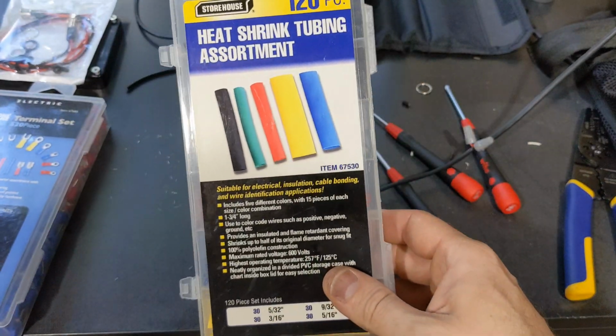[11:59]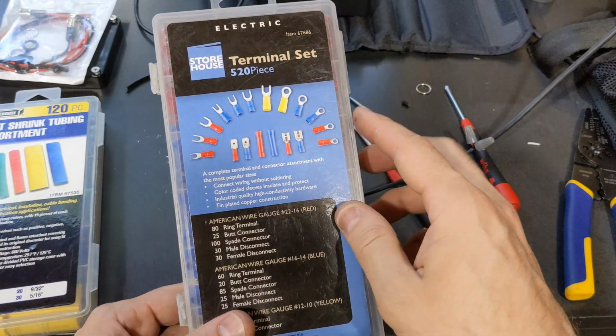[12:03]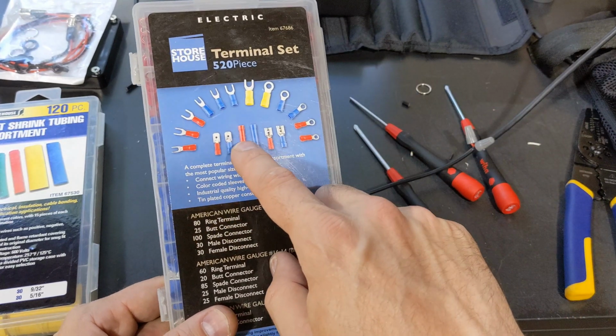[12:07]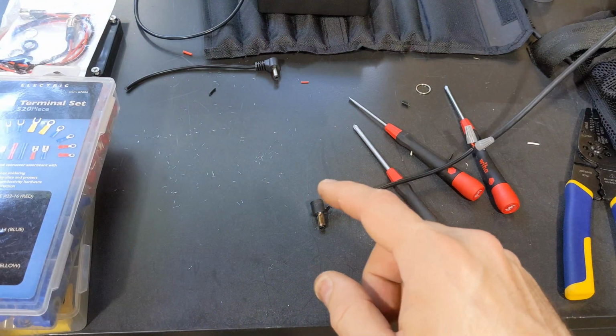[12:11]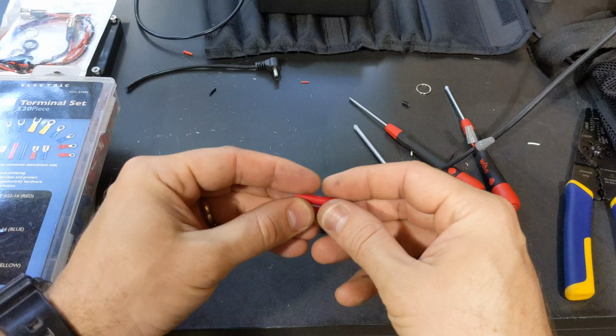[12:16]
So I'm going to remove these wire nuts here in a second, and I'm going to go through how to solder that. But what you'll need for this section is, I got this from Harbor Freight, just some heat shrink tubing, and it works really great. And then this terminal set, so it has a whole variety of different connectors. You don't necessarily have to have that. You're just going to need that straight barrel connector there, which is right here. And this wire is pretty fine. It's probably 20 gauge or something like that.
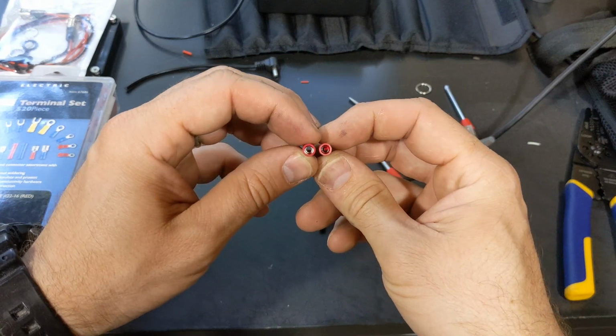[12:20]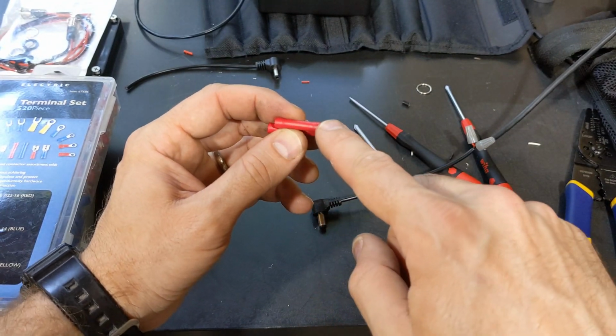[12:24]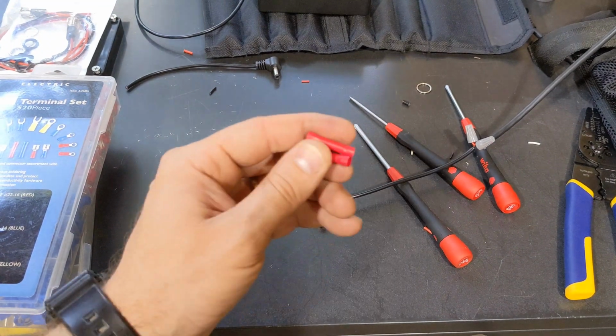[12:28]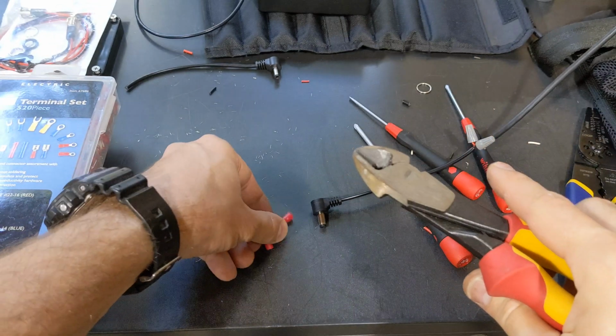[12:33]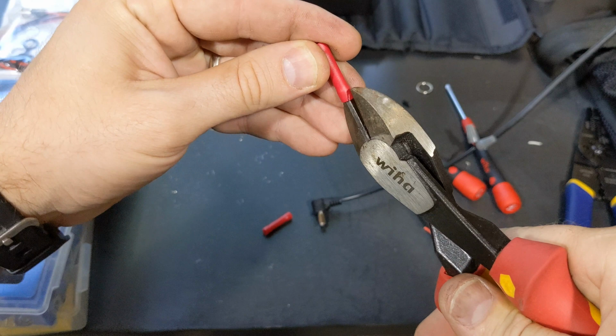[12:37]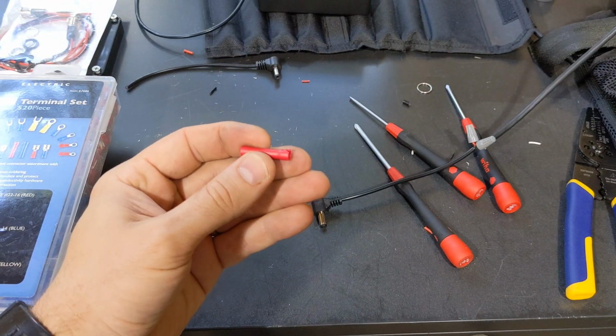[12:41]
So yeah, you want to make sure that these aren't going to be too big. Now what I'm going to do is I'm going to strip this plastic jacketing off of here, because I want to be able to solder in there so it has a real good connection. Best way I found to do that is with these pliers. So I'm going to go ahead and do that off camera, because it's going to be a little bit too difficult for me to do on camera. And then I'll come back and show you what that looks like.
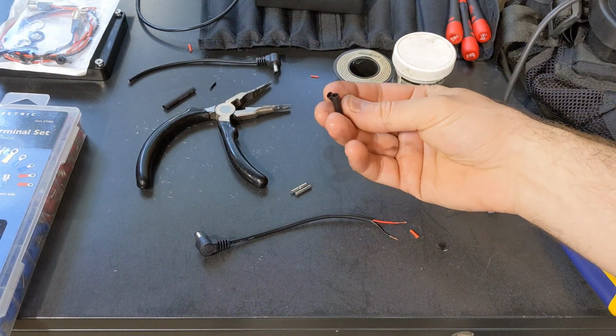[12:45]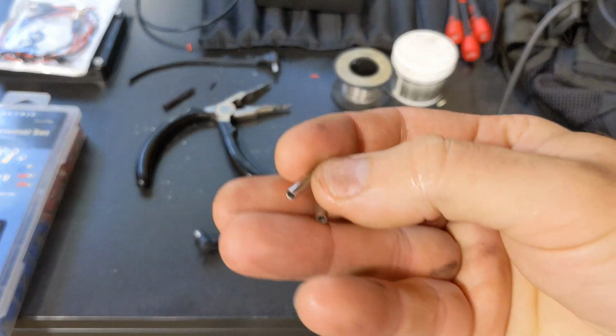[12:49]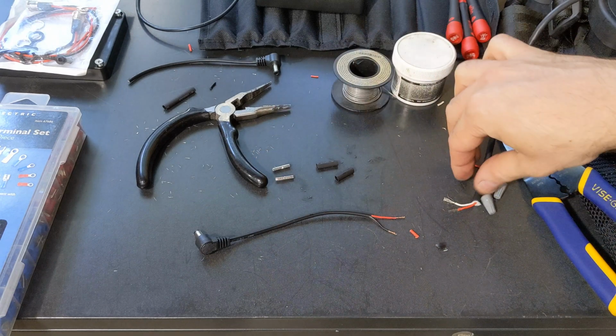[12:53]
All right, guys, so I'm back. I went ahead and got the shrink tubing ready. And I took the jackets off those connectors, and so you can kind of see what those look like. And what we're going to do, and I also took off the wire nuts here. So it's real easy with these wires.
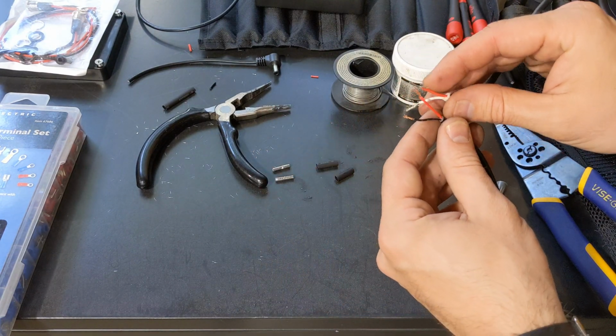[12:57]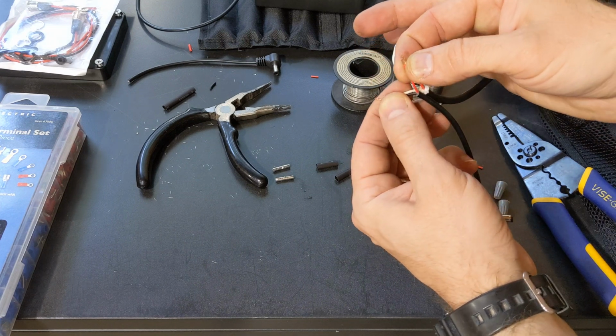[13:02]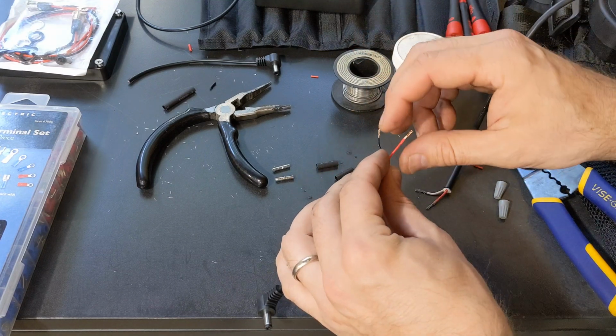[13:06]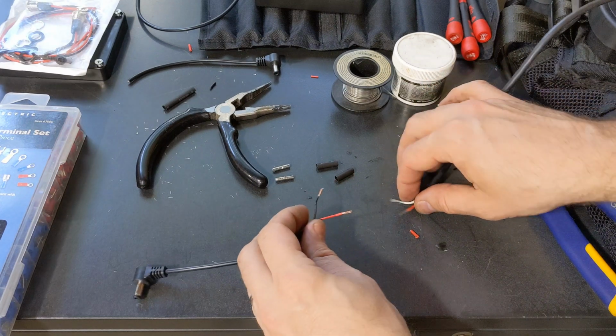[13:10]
The red goes to the red, just like that. And then the black and the white go together. So that's how you're going to set it up. But we're actually going to do it end to end, and you'll see what that looks like here in a little bit.
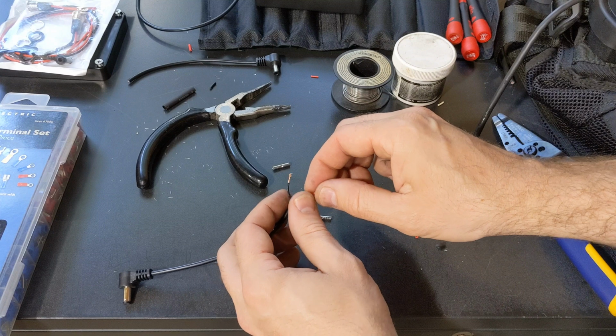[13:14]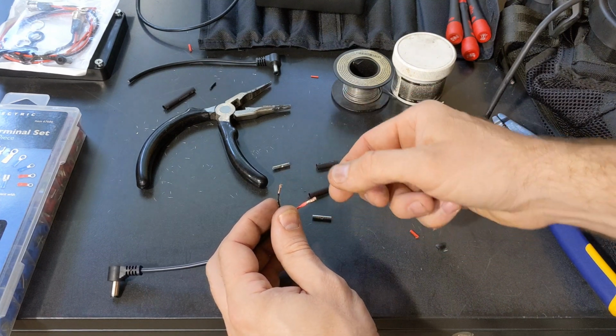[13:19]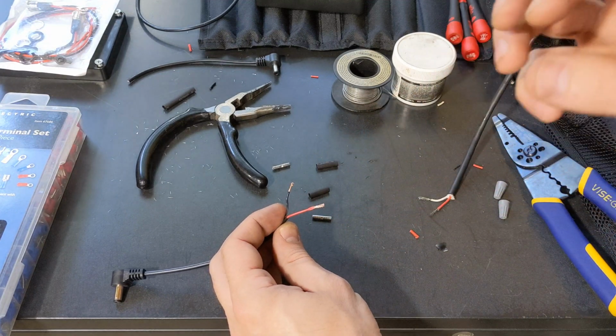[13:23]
What I'm going to do is put this over top, move those out of the way, and then solder up the wires together. Then I'll slide over the barrel, crimp it on both ends just to hold it tight, and then do the shrink tubing over top. So I'm going to go ahead and do that, and then I'm going to show you what that looks like.
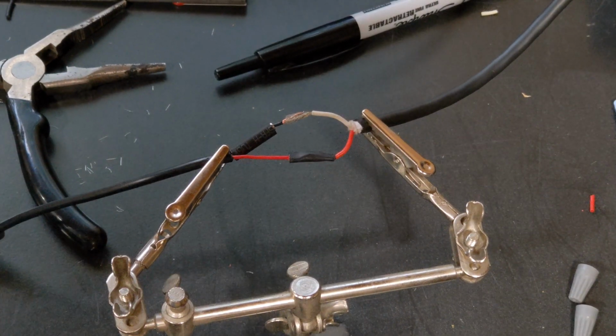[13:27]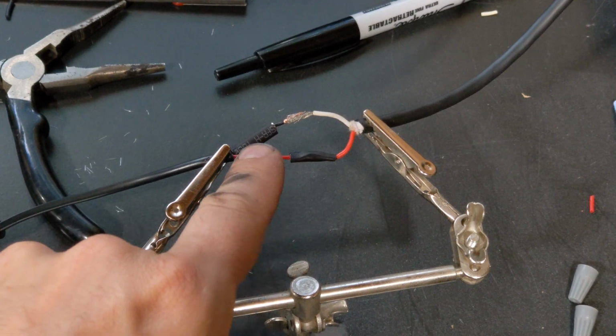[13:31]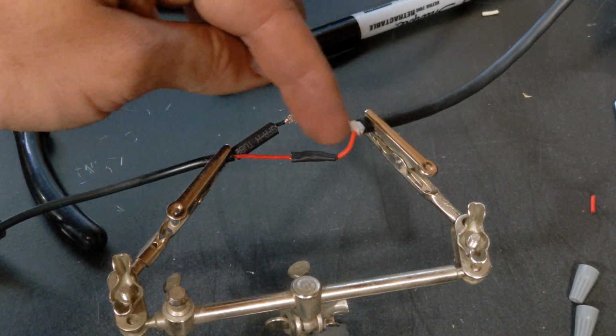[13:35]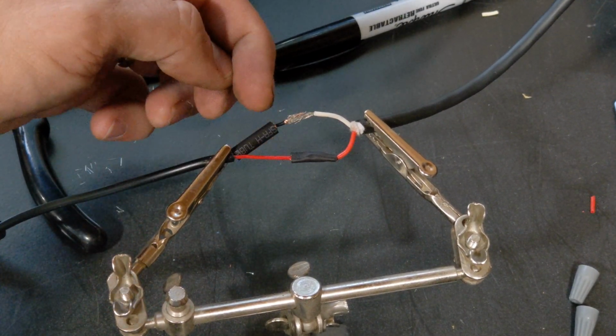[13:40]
All right, guys, I just want to show you this real quick. I got one done right here, and I'm getting ready to do the second one. So I wanted to show you how I'm going to do it. I've got the black and the white wire, and then the red and the red. You've got to make sure you already put your barrel connector on before you solder it, or you won't be able to get it on, and your shrink wrap tubing. So don't forget that.
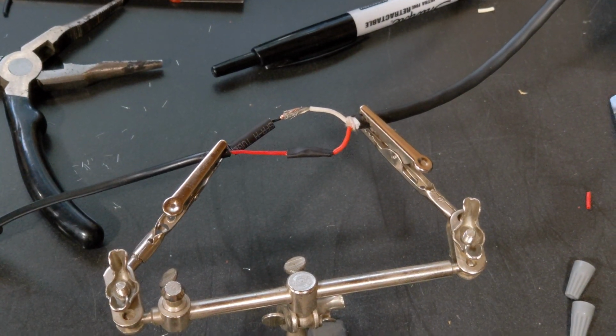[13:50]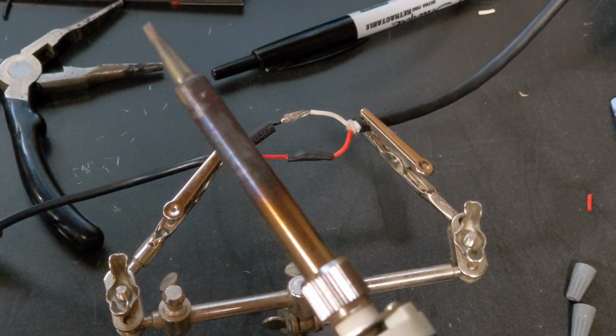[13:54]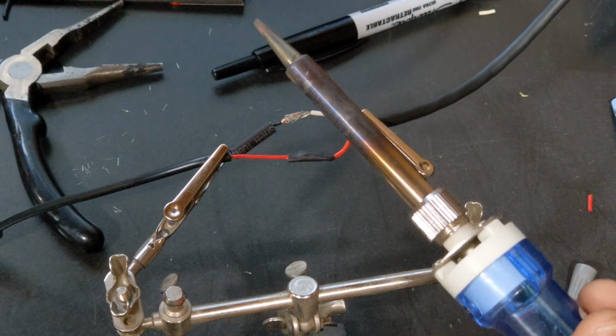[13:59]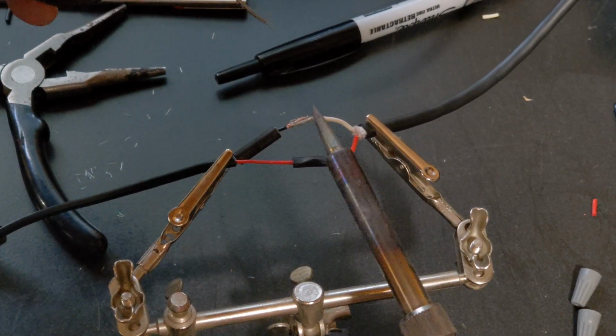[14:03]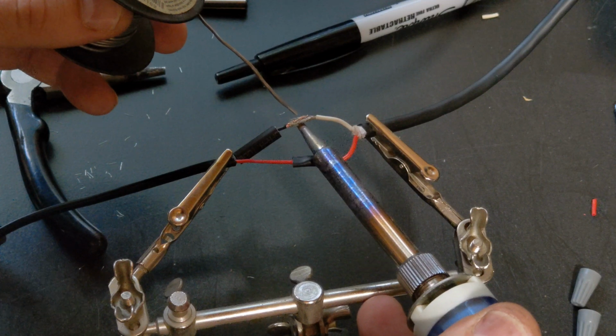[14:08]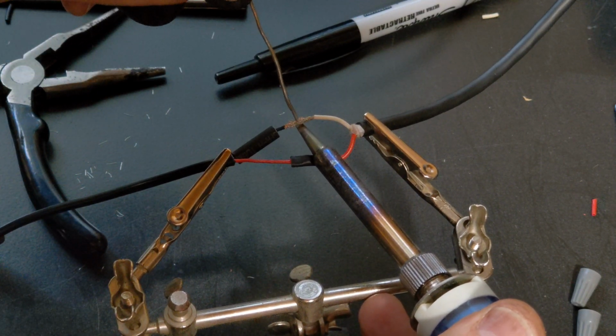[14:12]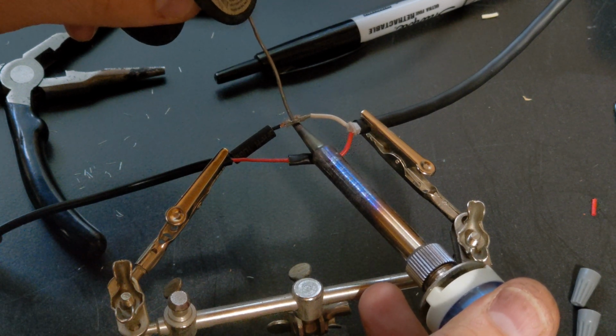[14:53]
Okay, so this is going to be a little bit difficult probably to do on camera, but I'll give it a shot so you guys can see what I'm doing, get a rough idea. All right, so let's see here. Basically, you just got to heat up the wire real good. So I'm going to use the end of the silver solder to push down into the wire here. There we go. It got hot enough and started melting it.
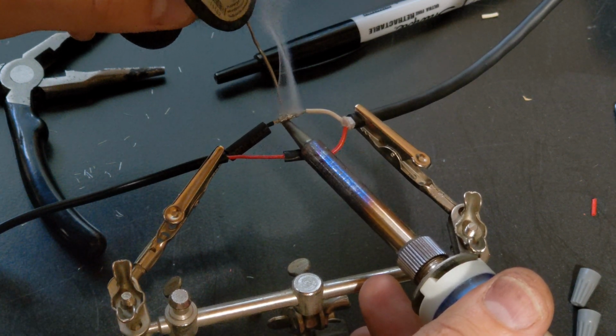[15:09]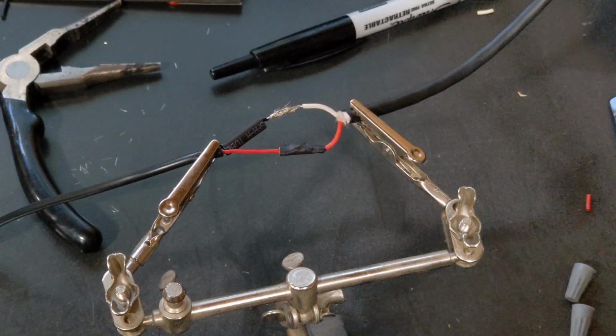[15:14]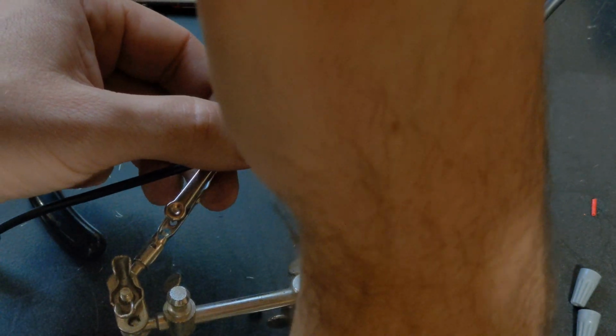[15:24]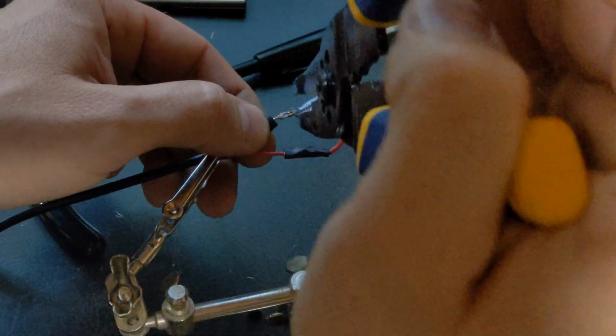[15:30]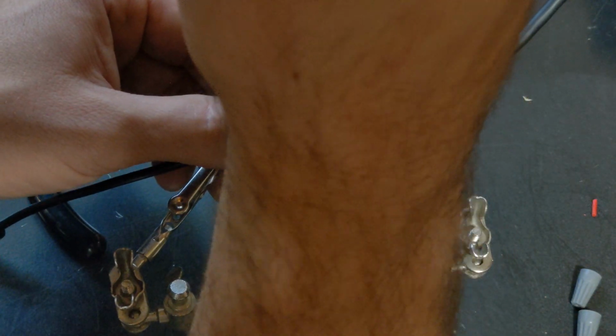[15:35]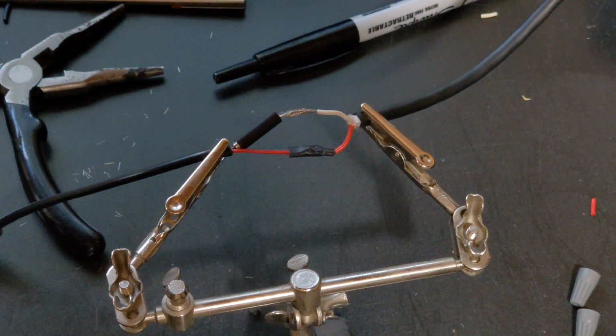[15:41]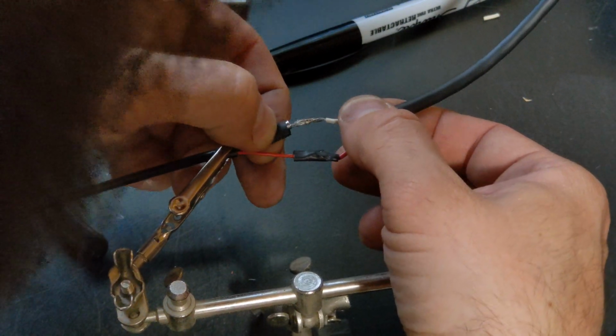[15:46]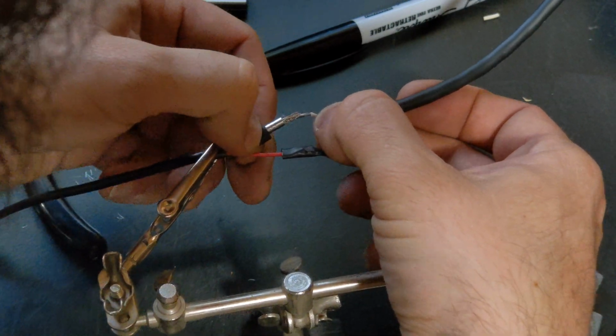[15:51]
All right, so now I just need to make sure that I squeeze it enough to get the connector over top of it and everything. And you can always melt the solder a little bit more if you need to, but this joint's really good, really well connected. It's not going anywhere. There we go. I'll see if I can fit it over top. Let's see, I don't know if it's going to fit. Oh, there we go. It's a little tight right there.
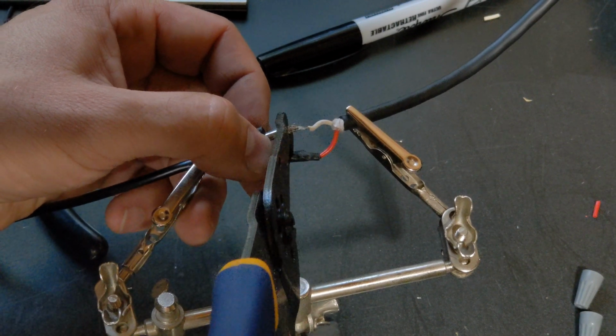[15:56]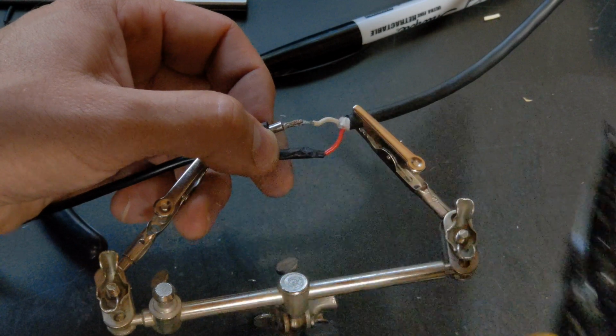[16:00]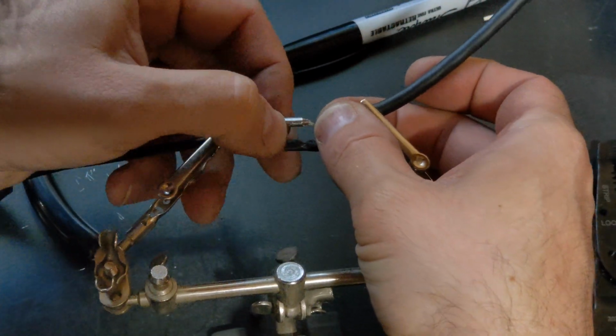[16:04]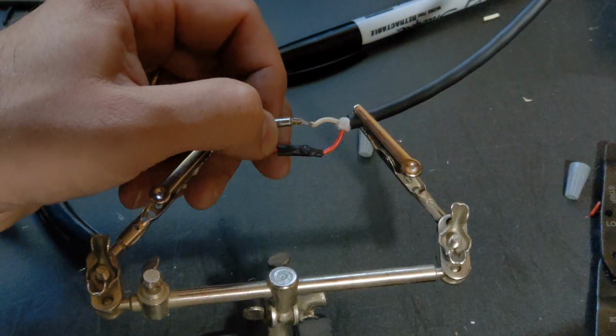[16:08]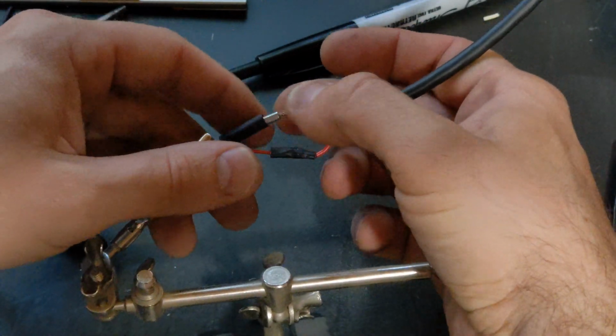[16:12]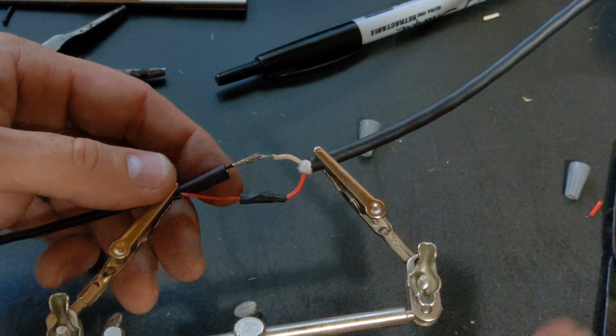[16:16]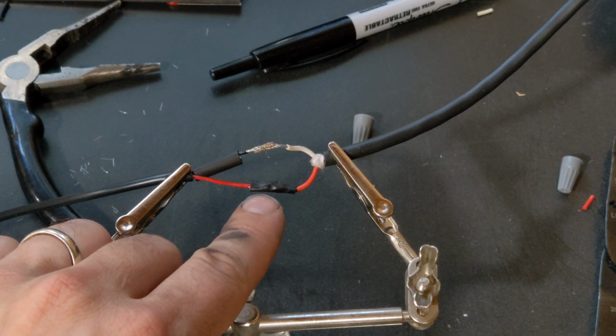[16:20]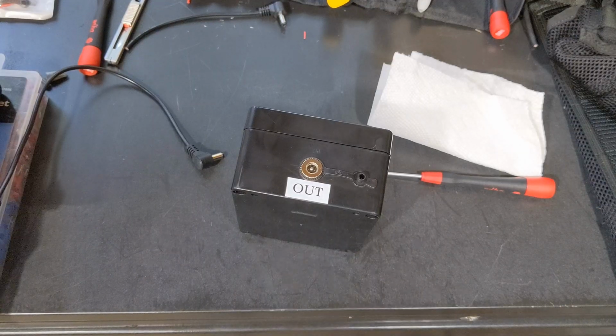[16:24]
Anyway, you get the idea. I'm going to have to mess around with this a little bit more, but you can get the idea of how that works. You slide it over and you do what I did on this one right here. So after that, we'll put some electrical tape around it and it'll be good to go. All right, guys, ready to go.
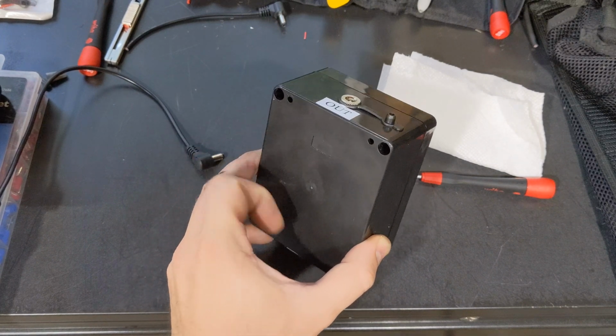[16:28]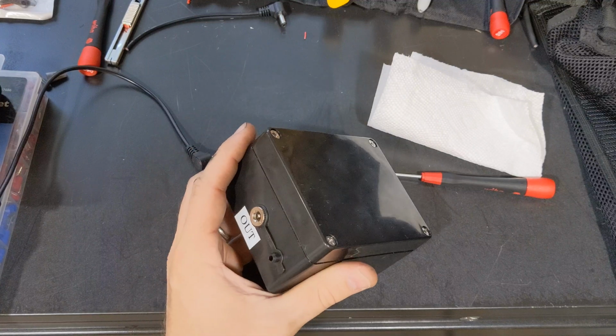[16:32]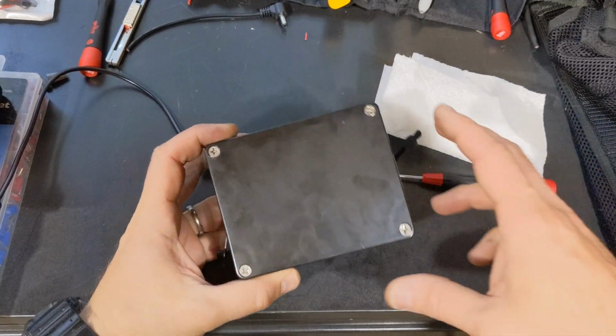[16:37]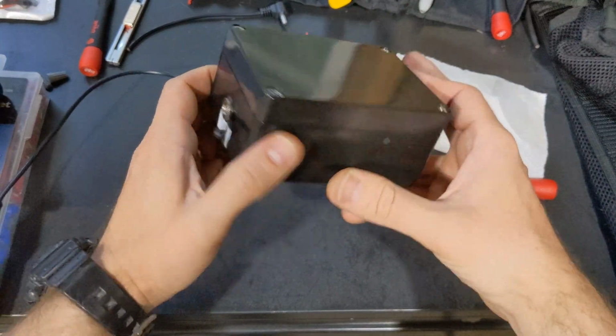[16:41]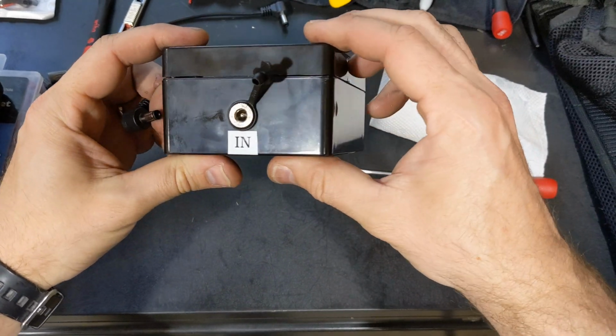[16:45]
The only thing left to do would be, if you wanted to, add some sort of clip or belt loop or something like that, so you could throw it on your belt. But you're not going to have to worry about any dust getting in there, shorting out the circuit board in a box like this. So it's dust proofed and waterproof. I went ahead and labeled it the input and the output, so there was never any confusion about that.
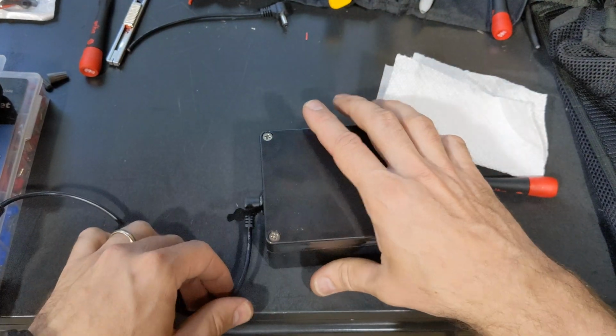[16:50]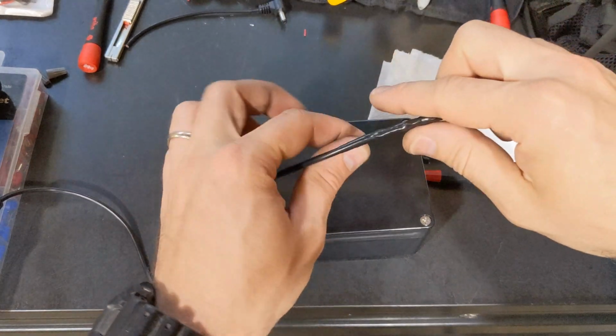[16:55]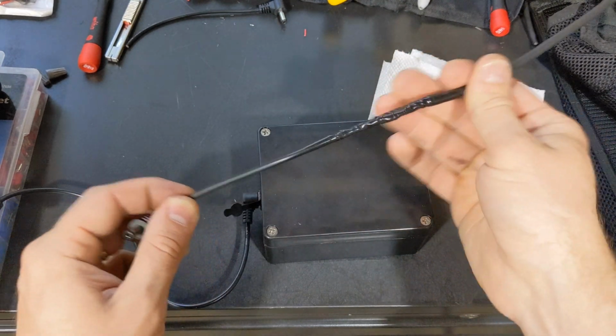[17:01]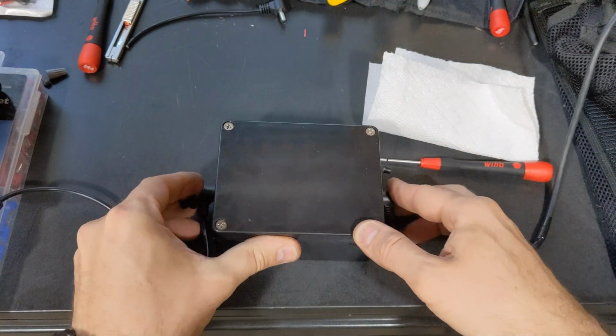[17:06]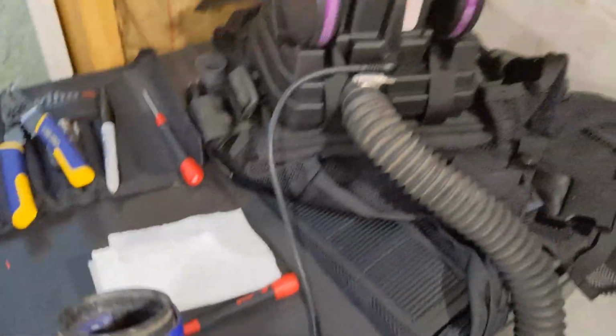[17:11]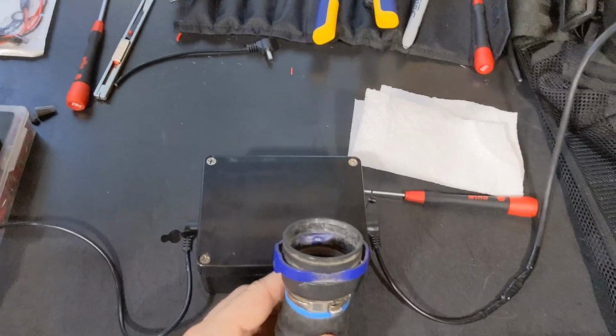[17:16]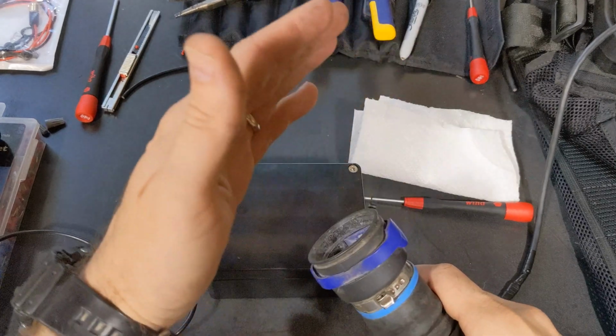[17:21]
And so yeah, just plug that end in, and here is the cord that I got finished up. So it's nice and secure now. Let's plug that in right there. And I will demonstrate. I've got it hooked up to this, so I'll show you. I've got the tester here. So then we just turn it on, and you get a nice cool breeze at the proper CFM output.
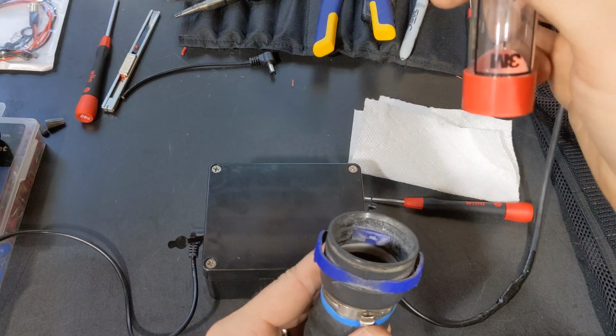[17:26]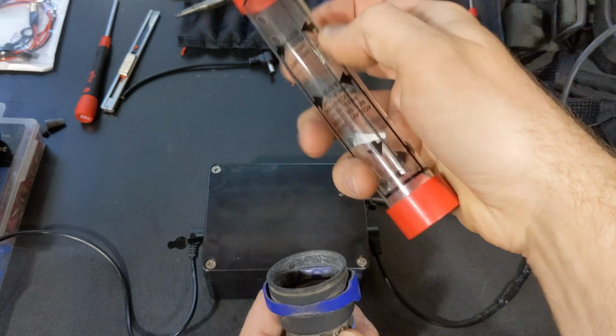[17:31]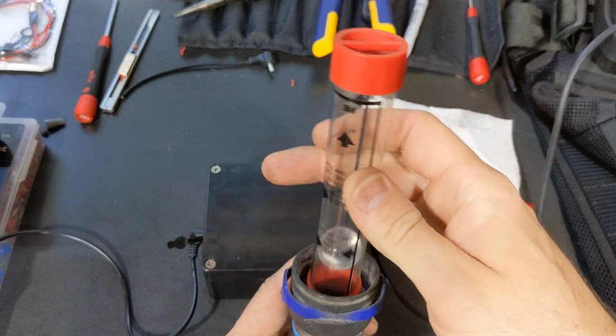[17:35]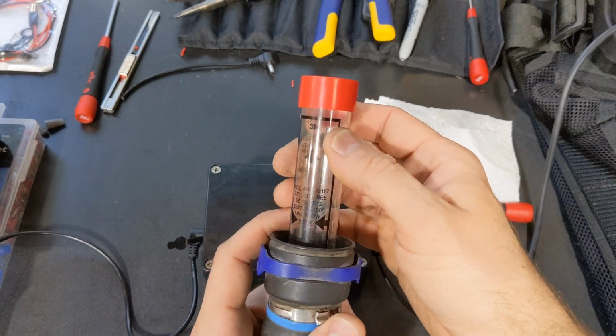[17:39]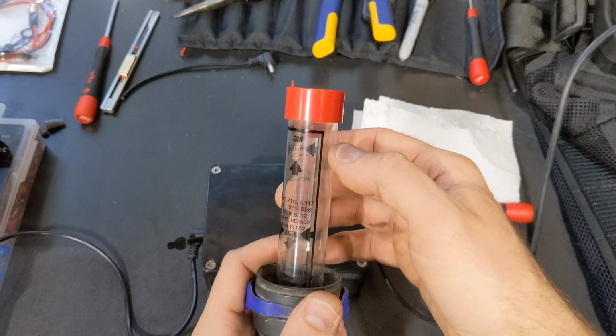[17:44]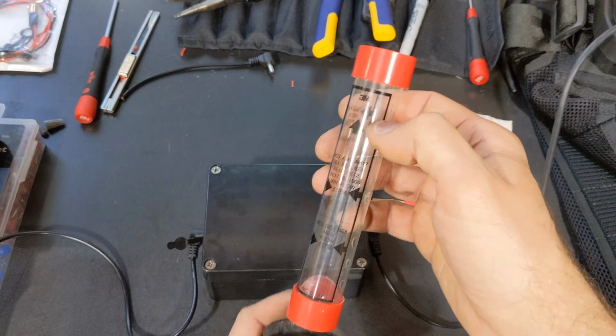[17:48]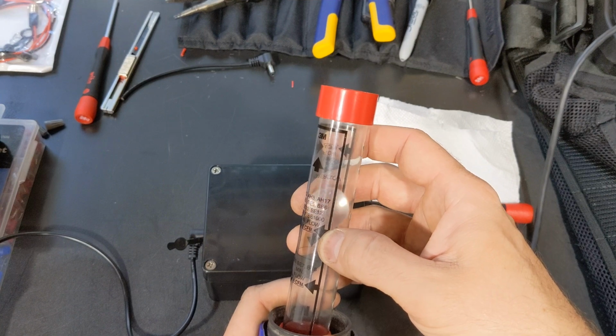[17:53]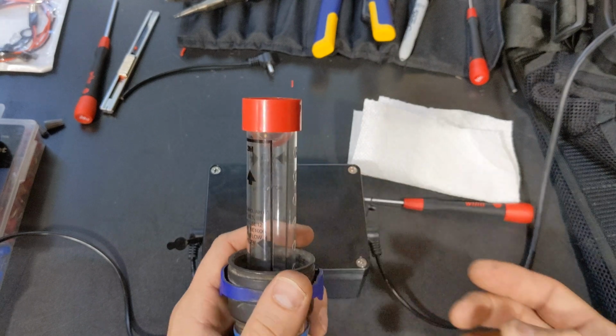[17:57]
So let's see here. Yeah, you can see the markings here. You've got the 6 CFM, the 4, that kind of thing. This just slams it up to the top. So my new TR300 Plus, it'll almost touch the top, but not quite. If you just run this, breathe easy off of 5 volts, then it'll kind of float in here somewhere, like right around there where that arrow is. But I mean, it just slams all the way to the top.
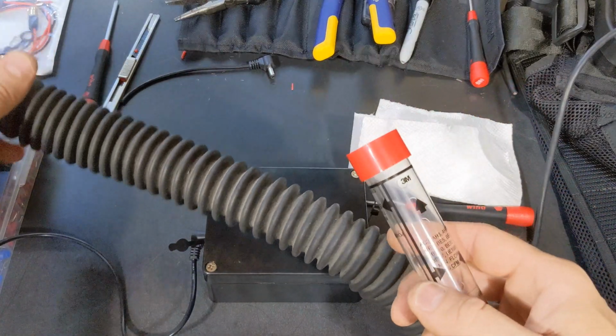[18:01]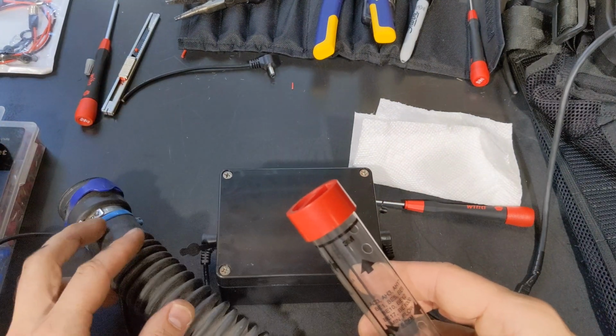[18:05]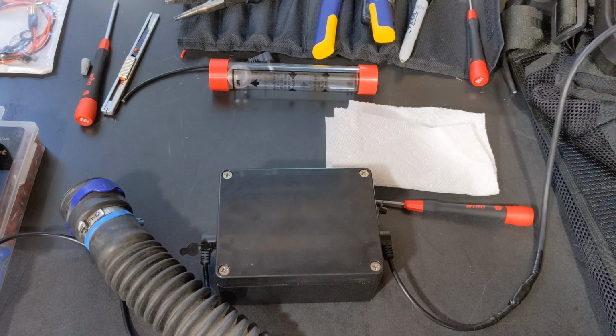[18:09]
It's perfect, and you're not going to prematurely burn the motor out from running too many volts through it. So yeah, that's basically how you do the conversion, guys. So good luck. If you have any questions, let me know.